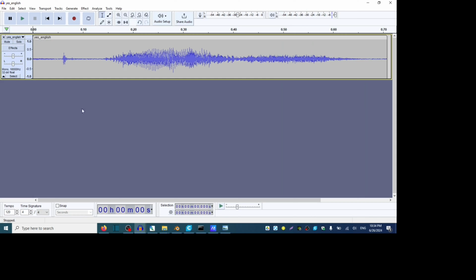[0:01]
This is the first version of my yes/no button. But what exactly is a yes/no button? Watch.
For 20 bucks. Hand it no! Whoa, $20 bucks! You can buy a yes/no button! Yeah, yes/no button. That thing sounds good. Please, Bingo! Oh, here it is. Look, Bingo. You push this. Yes. And if you push this one. No.
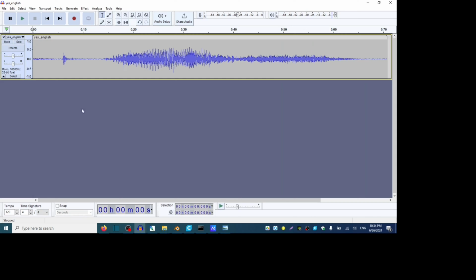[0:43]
After watching an episode, my daughter requests this button. After a thorough search, I only found one seller on Etsy who handmade it for $37, excluding shipping and batteries. Considering the cost, I decided to make my own button.
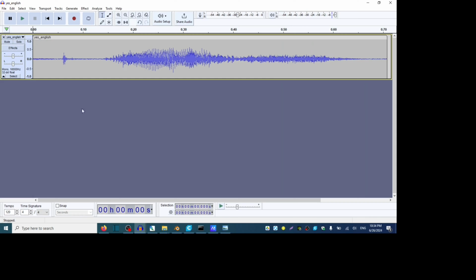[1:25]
The Etsy button was based on a Thingiverse post where the buttons are also printed. For the first button, I used buttons from another project and 3 CR batteries to achieve 4.5 volts. Unfortunately, these batteries drain quickly for some reason. So I switched to using rechargeable batteries, an 801 module, buttons, connectors, an on-off switch, a soldering iron, and a USB cable for the charger.
While waiting for the boards to arrive from China, I prepared the audio files. To record from your computer, you need to download the free Audacity software. I will post a link in the description. For the audio input, you should select Stereo Mix. If it is not enabled, you need to enable it. After recording, export the files as MP3.
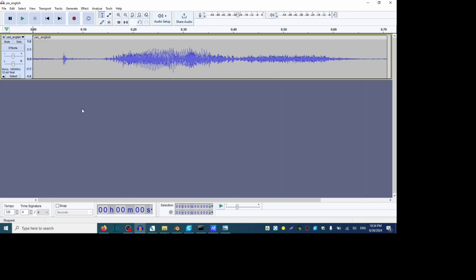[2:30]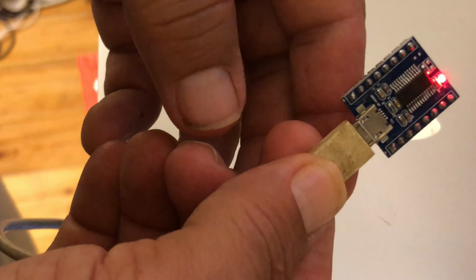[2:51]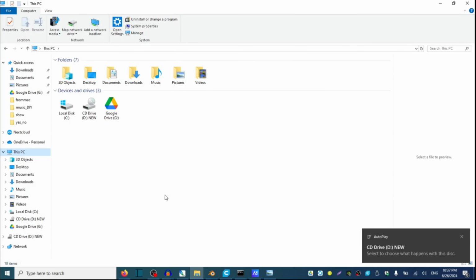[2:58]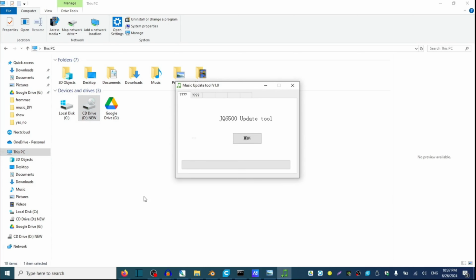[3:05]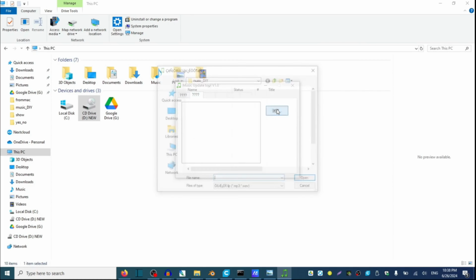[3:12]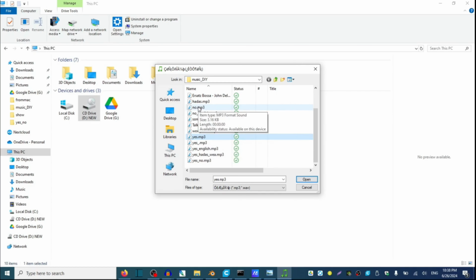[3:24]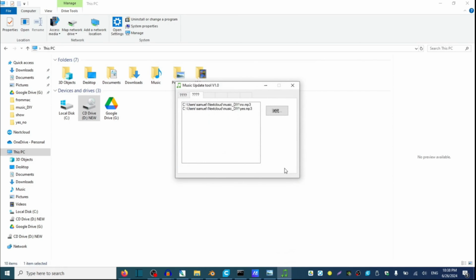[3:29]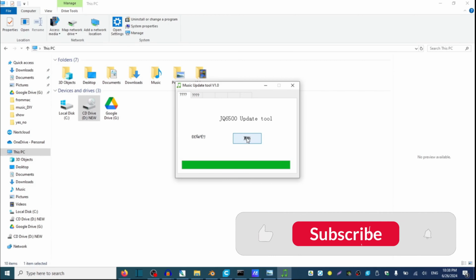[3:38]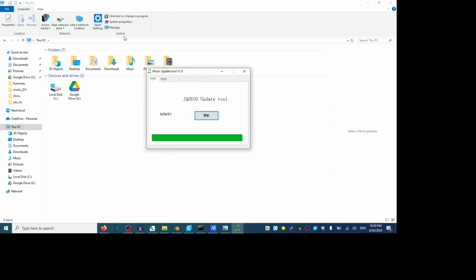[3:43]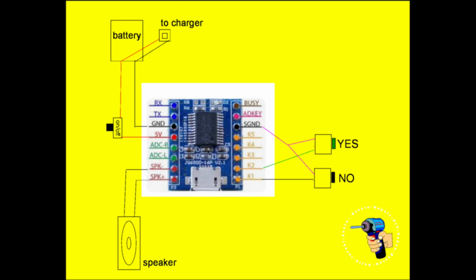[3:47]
And then connect your board to the PC to transfer the files. The menu may be in Chinese, but this shouldn't pose a problem. Go to the second tab to upload. Select the files. You can select more than one file by holding the Control key on the keyboard, and then go back to the first tab to upload them. Then connect everything as shown in this soldering diagram.
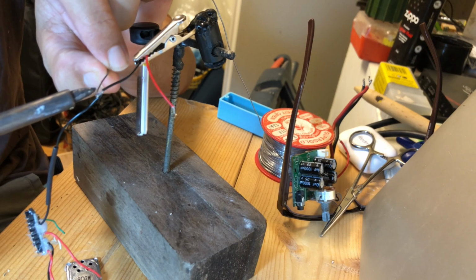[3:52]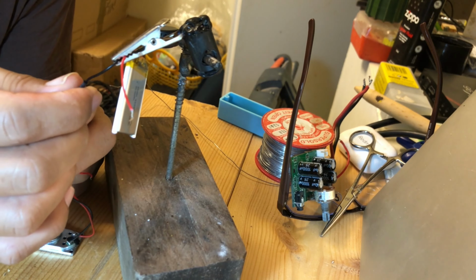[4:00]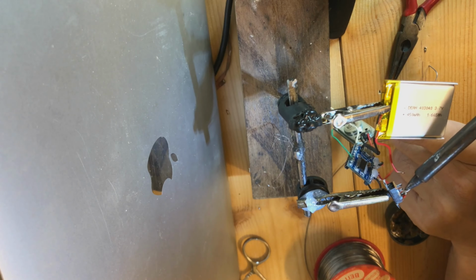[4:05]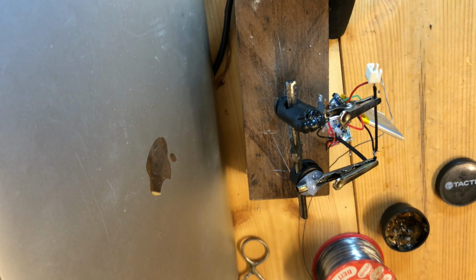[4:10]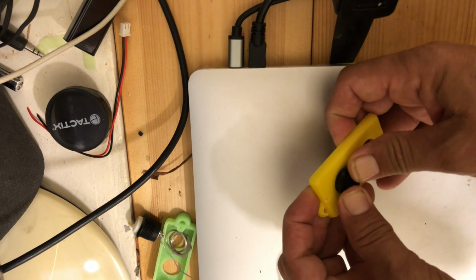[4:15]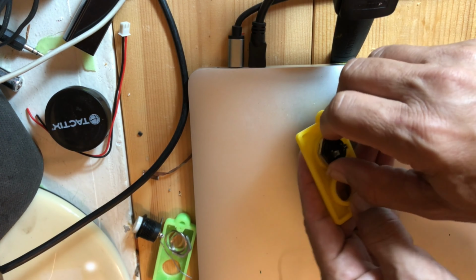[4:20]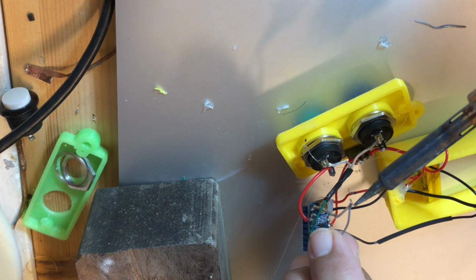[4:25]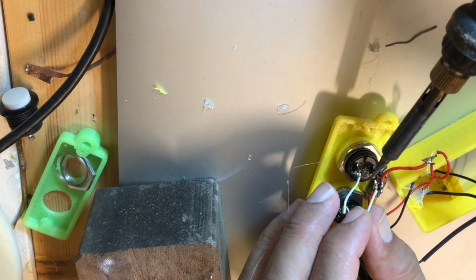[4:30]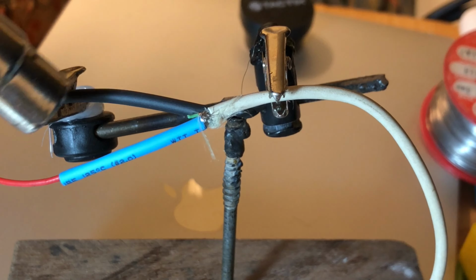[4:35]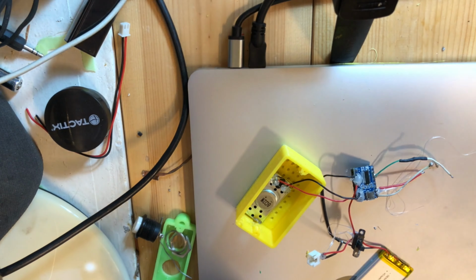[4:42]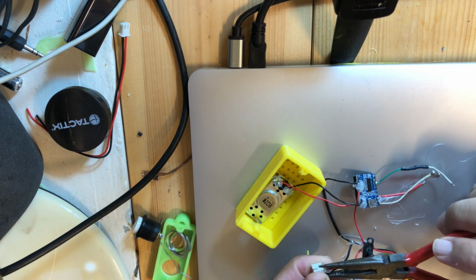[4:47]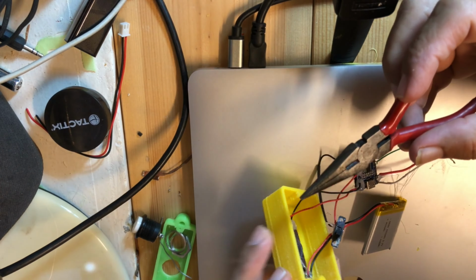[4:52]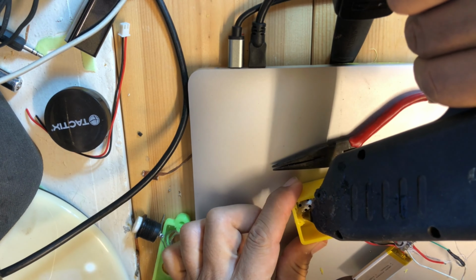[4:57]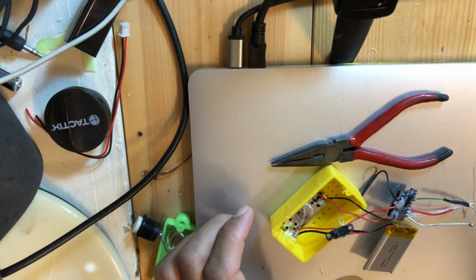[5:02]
After completing the soldering, I began creating the charger cable using a USB cable and a rectangular connector, typically used for connecting fans to PC motherboards or small speakers. I then placed everything into the 3D printed case I designed. I will also post a link for that in the description. The order of installation was the speakers first, followed by the battery, and then the sound module.
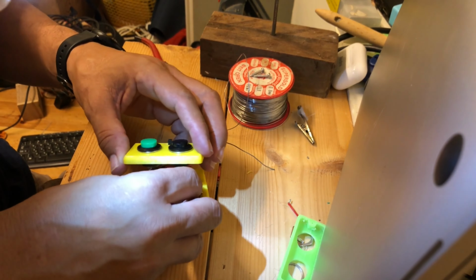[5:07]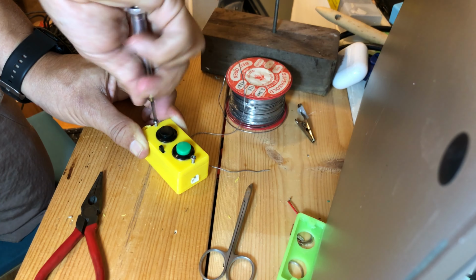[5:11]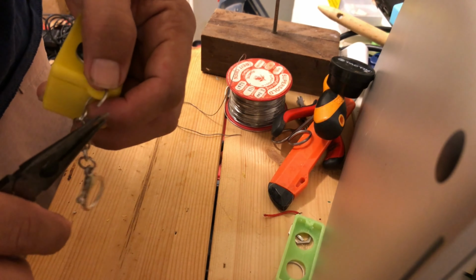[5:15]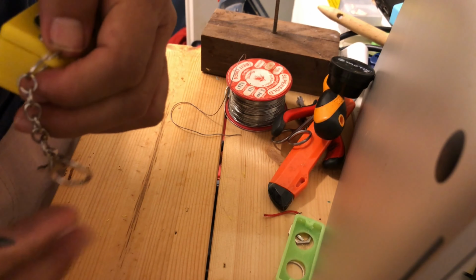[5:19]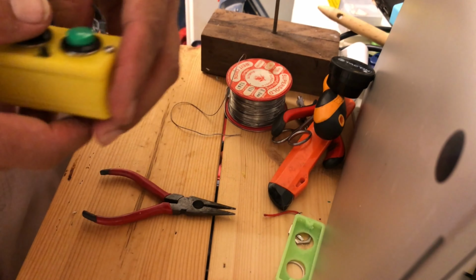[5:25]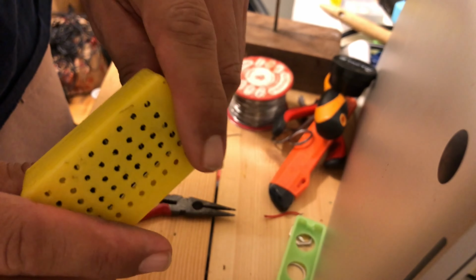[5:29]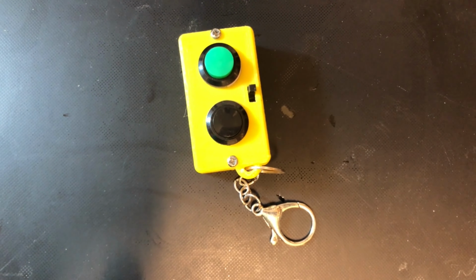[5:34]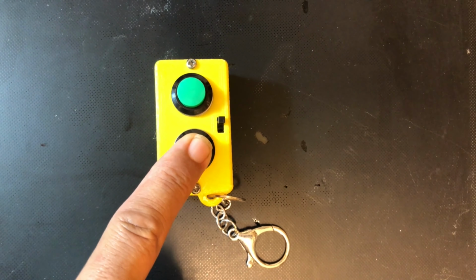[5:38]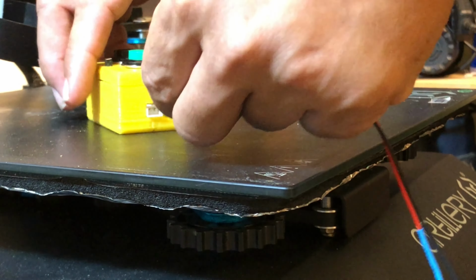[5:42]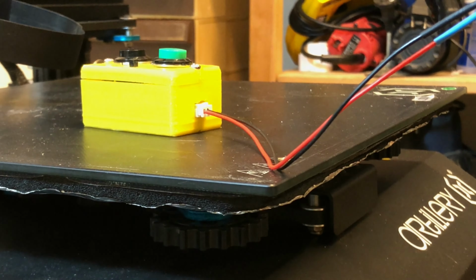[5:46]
Since it's possible, we play with different kinds of sound files. Yes! Yes! No! So there you have it, a yes/no button that also can be recharged.